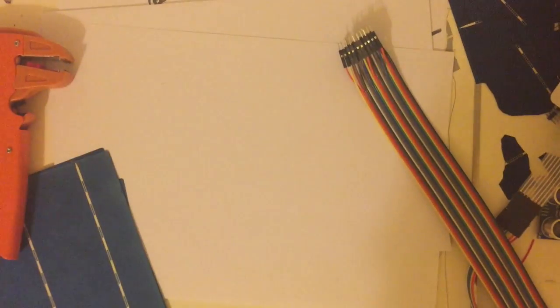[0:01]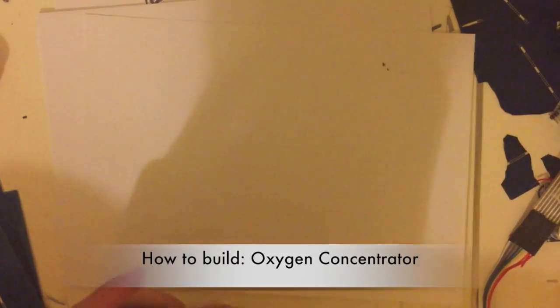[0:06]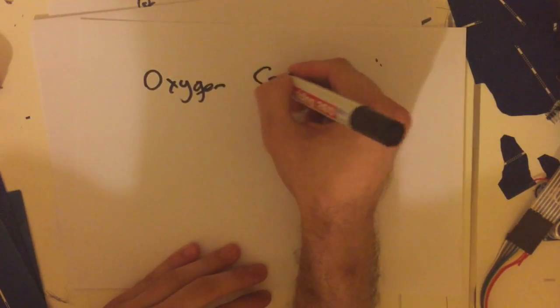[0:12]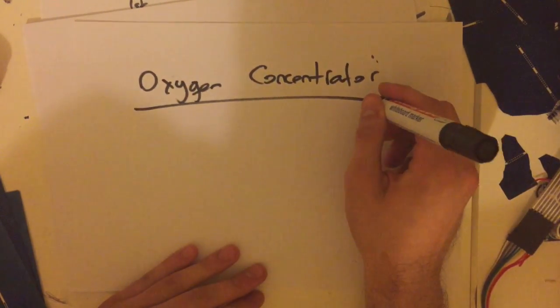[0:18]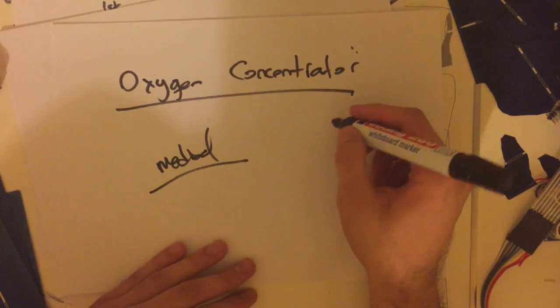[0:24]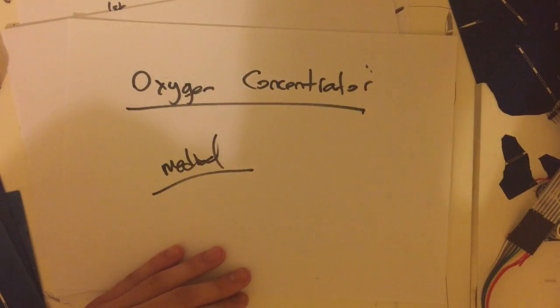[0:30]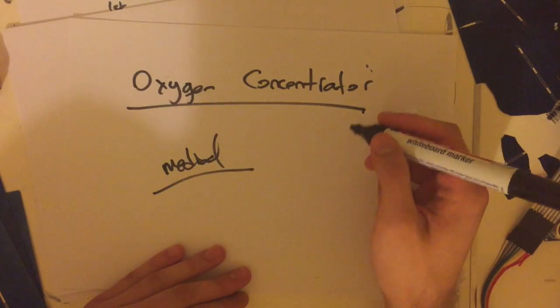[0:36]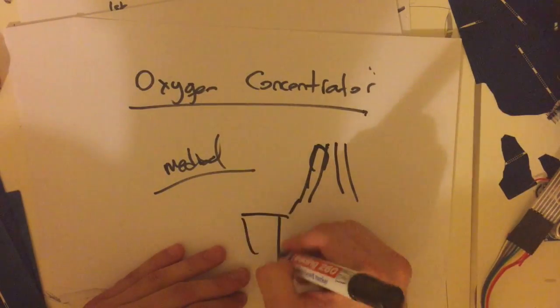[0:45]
Hi guys, so today we're going to be building an oxygen concentrator. What this device does is, this is actually a medical device used frequently in hospitals and in the homes of patients who need enriched oxygen air to breathe because they cannot breathe well. So people who are really sick use this device with some tubes coming out of the device into their noses.
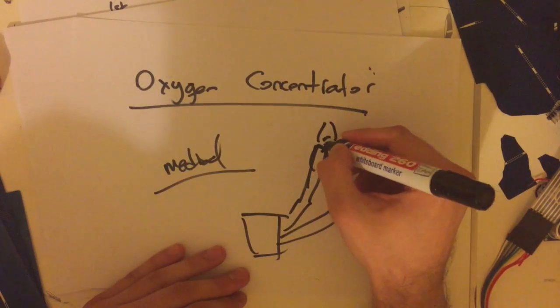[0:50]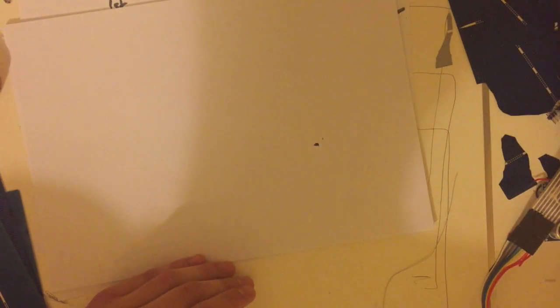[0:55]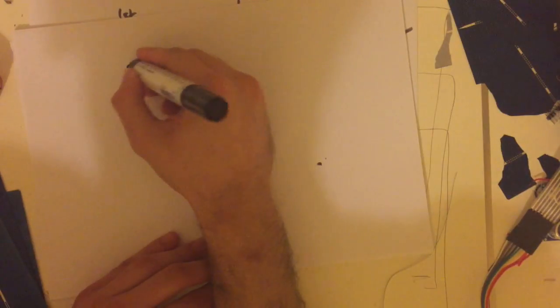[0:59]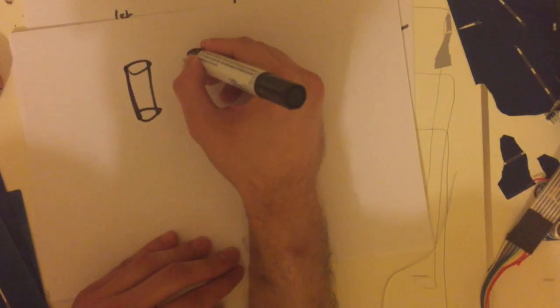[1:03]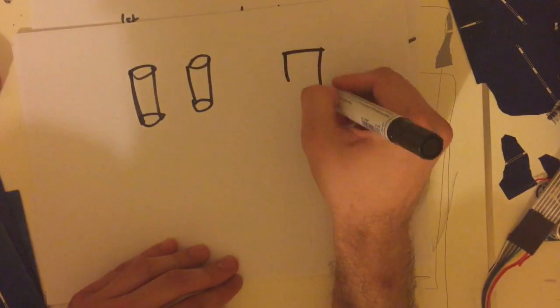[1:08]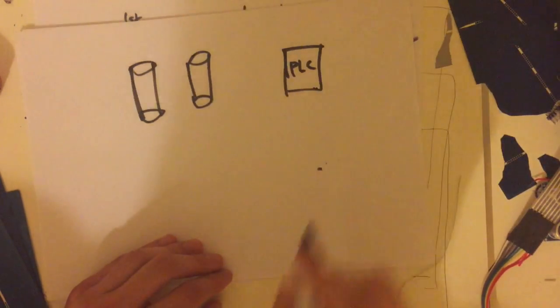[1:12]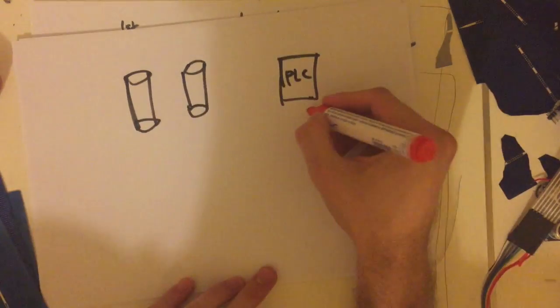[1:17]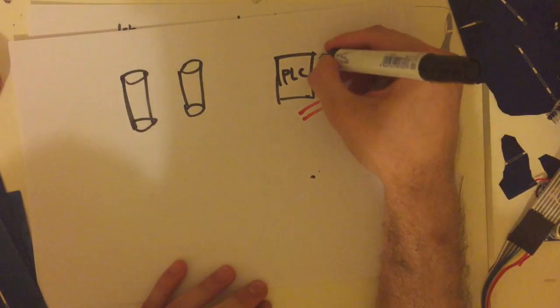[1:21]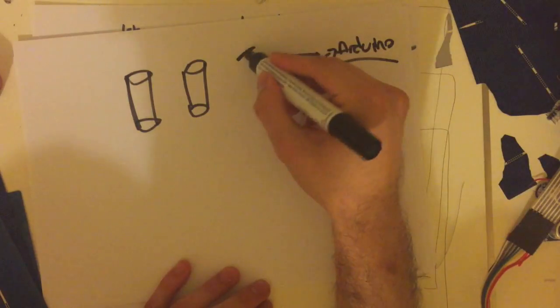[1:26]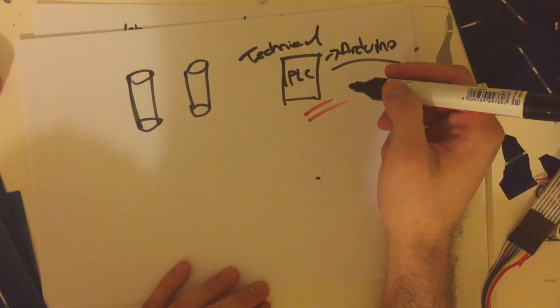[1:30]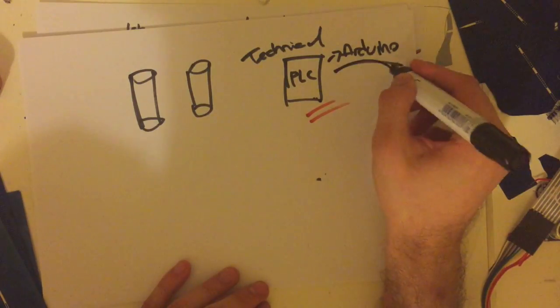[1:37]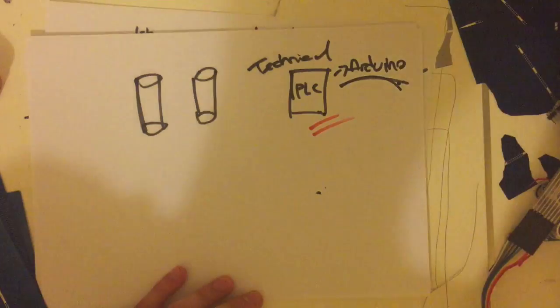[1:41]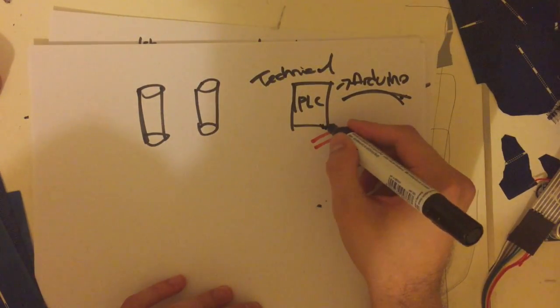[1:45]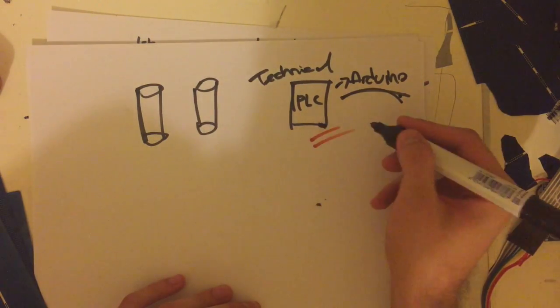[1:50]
Okay, so in order to build this device, we're going to be needing a couple of materials, such as some iron tubes or aluminum tubes, two of them actually, a device called PLC. This is very important for the project, because PLC is something like Arduino, but it's more technical. It's rather more technical and professional in terms of RAM, processing speeds, and memory. I'm sorry, memory. Arduino's memory is actually better than PLC. I mean, design-wise, it is better, but PLC is much more frequently used in factories or homes, mostly in boilers.
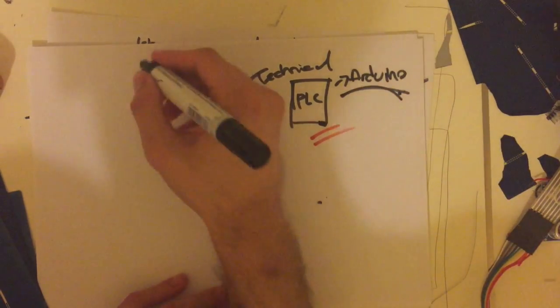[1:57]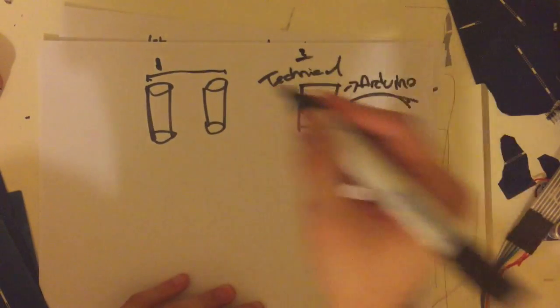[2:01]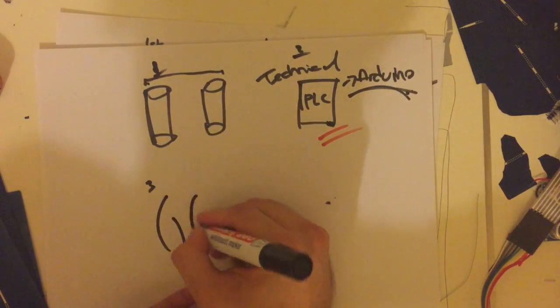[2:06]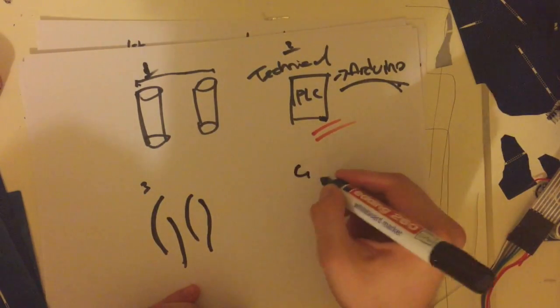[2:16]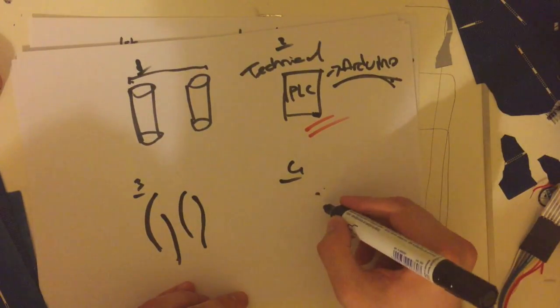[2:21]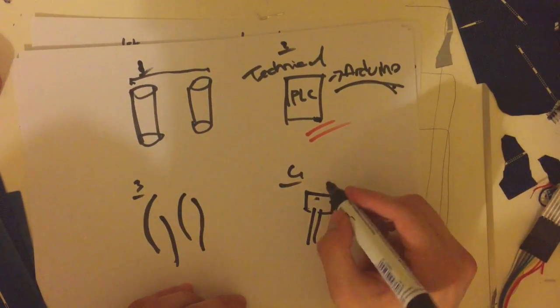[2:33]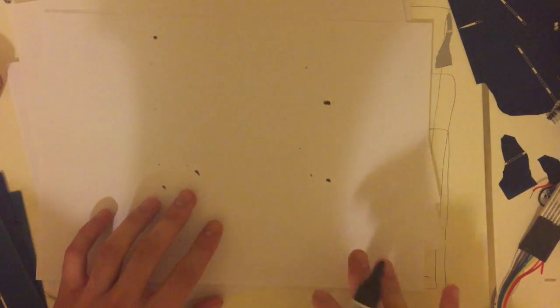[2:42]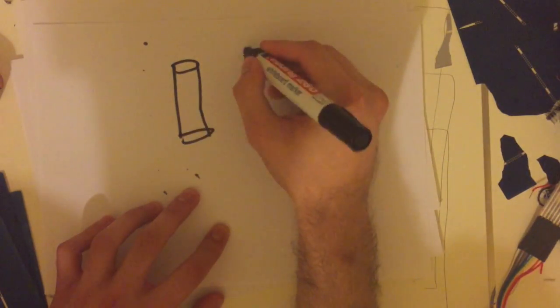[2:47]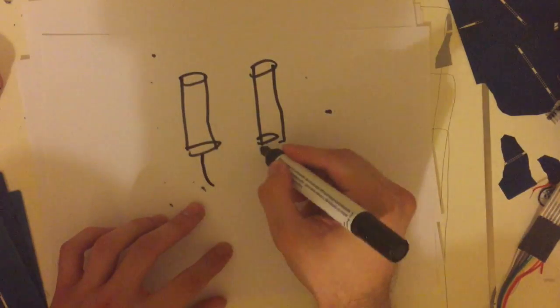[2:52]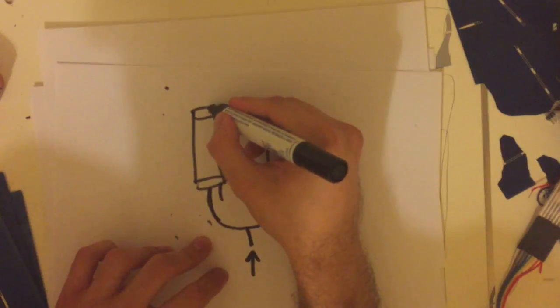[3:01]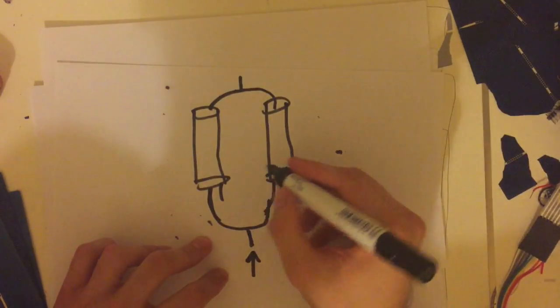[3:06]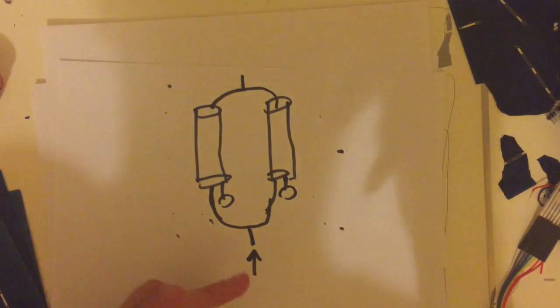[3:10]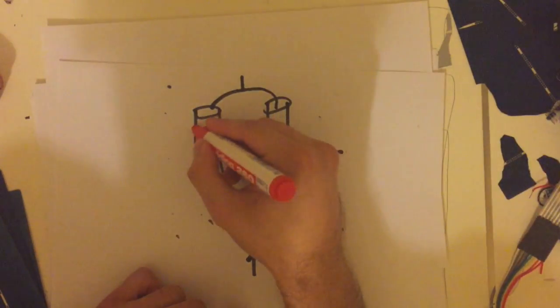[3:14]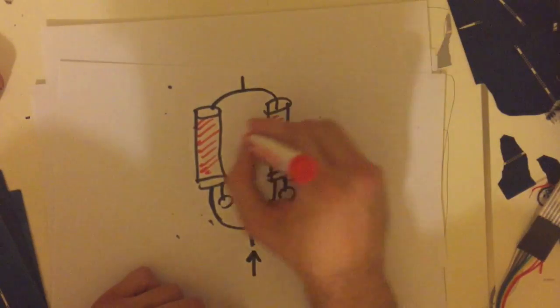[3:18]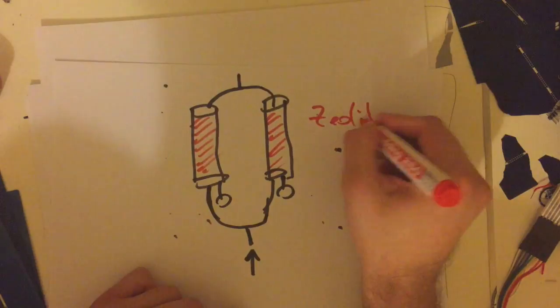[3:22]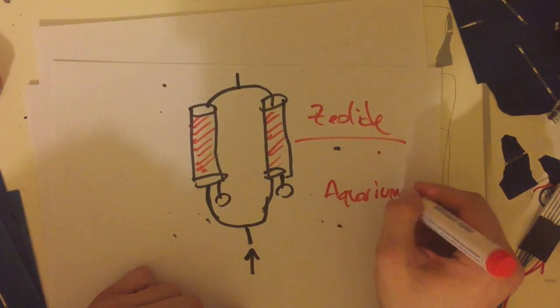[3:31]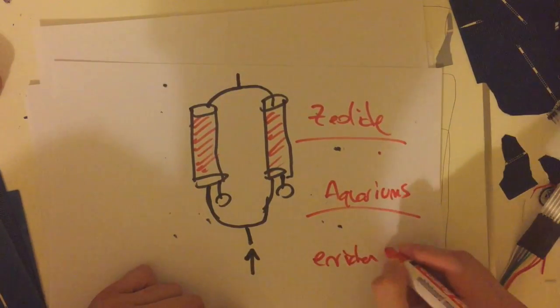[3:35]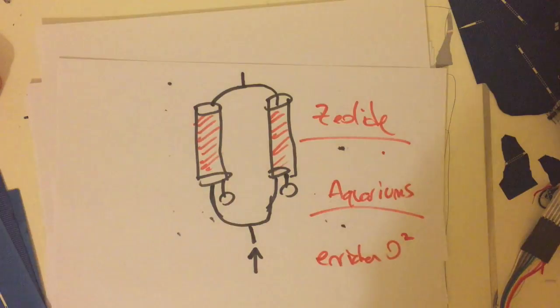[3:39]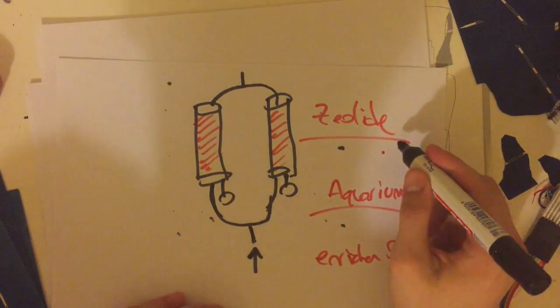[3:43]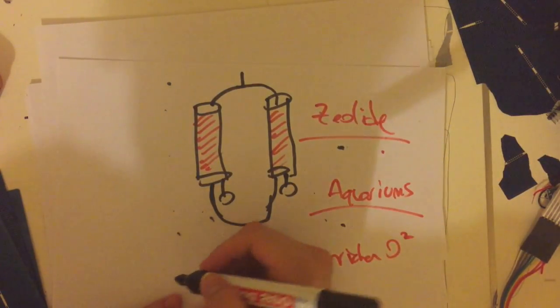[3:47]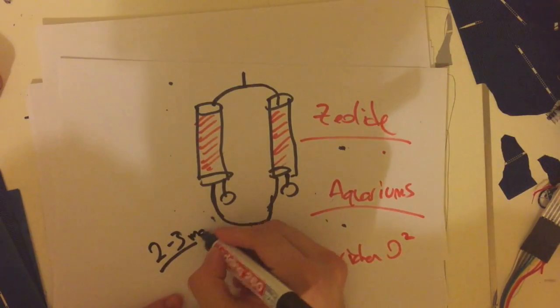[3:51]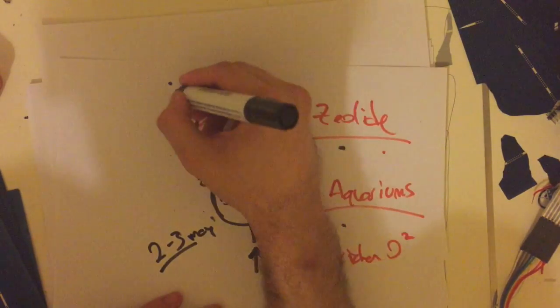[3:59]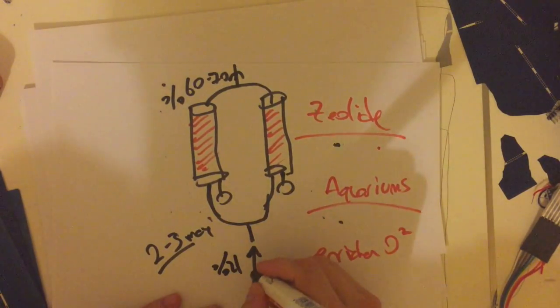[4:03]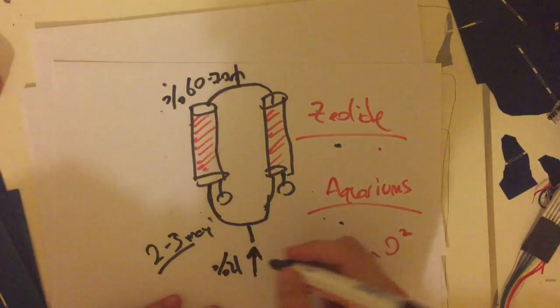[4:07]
These will be our exhaust tubes. So the working principle of this product is that we're going to be filling these aluminum tubes with a material called zeolite. Zeolite is also used in aquariums for fishes to enrich the oxygen levels. Okay. So we're going to be filling these aluminum or iron tubes with zeolite and applying slight pressure, about 2 to 3 bars at max, to create an oxygen output of 60 to 70%, where 21% of oxygen was our initial oxygen level in the air.
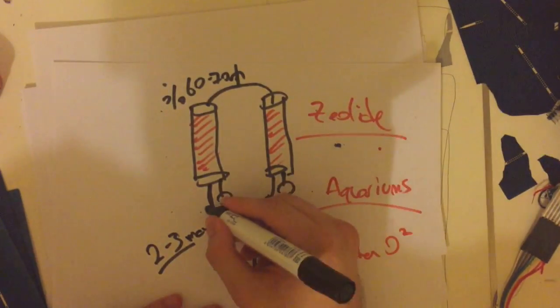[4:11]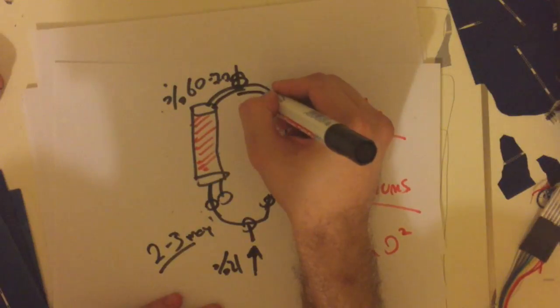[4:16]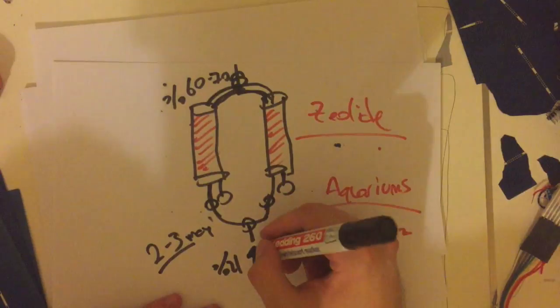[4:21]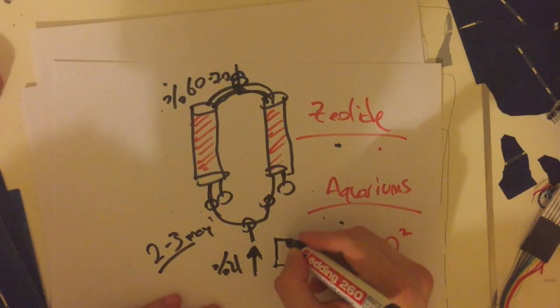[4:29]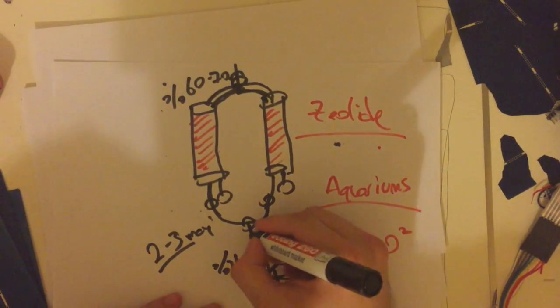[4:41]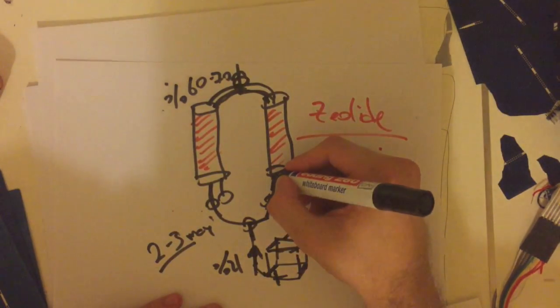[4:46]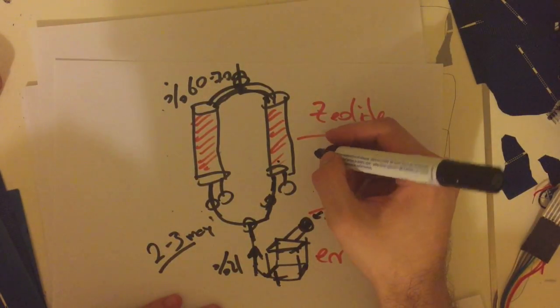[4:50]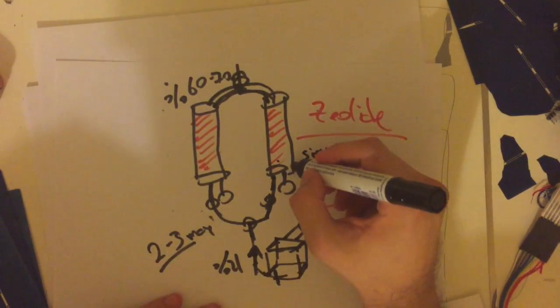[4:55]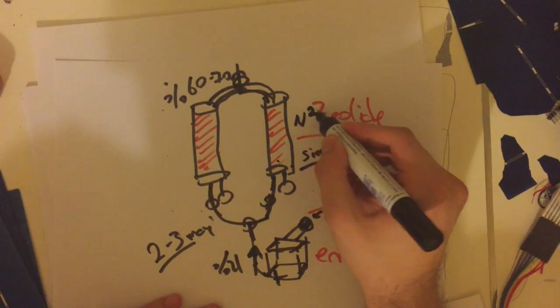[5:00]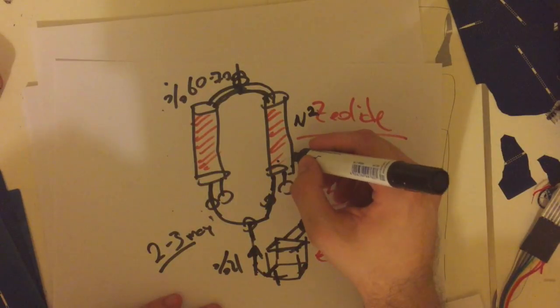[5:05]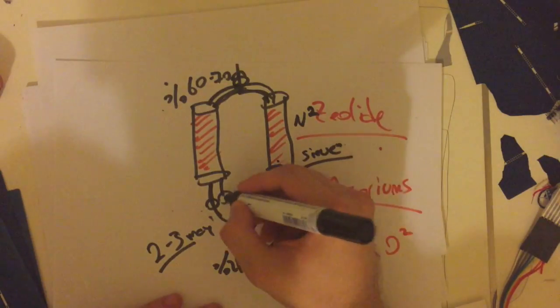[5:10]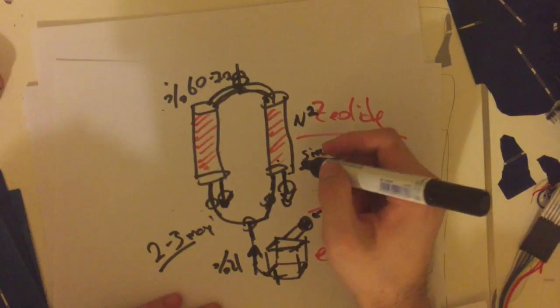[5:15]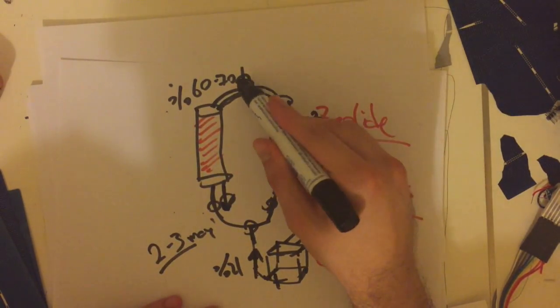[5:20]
So we're going to be placing a valve right here, here, and here, and here. So this is double. Okay, so 2 tubes are coming actually through this valve. So okay, we turned on the electric motor right here. Let me draw this. I forgot to include this in the materials list. Okay, I know my drawing is the worst, but anyways. So this is air in, air coming in with pressure. With the pressure in the air, zeolite is actually acting like a sieve. This is also called a molecular sieve. And with the right pressure, N2 is being subtracted from the air. So excess N2 is coming out of the exhaust pipes we have initially placed, and enriched oxygen air is coming from this side.
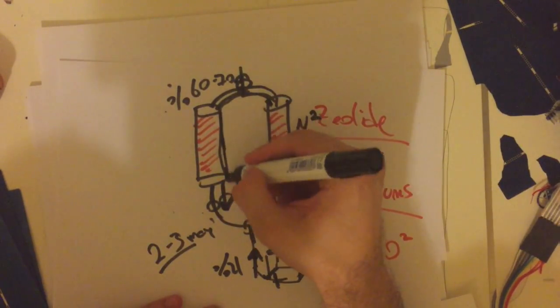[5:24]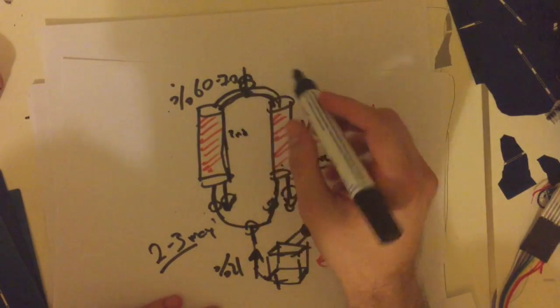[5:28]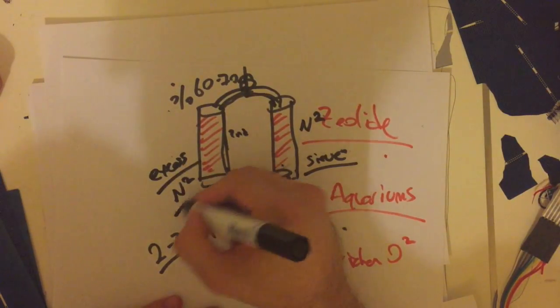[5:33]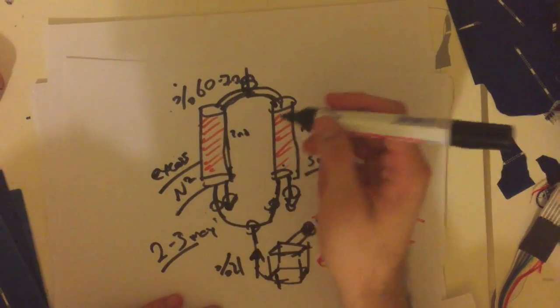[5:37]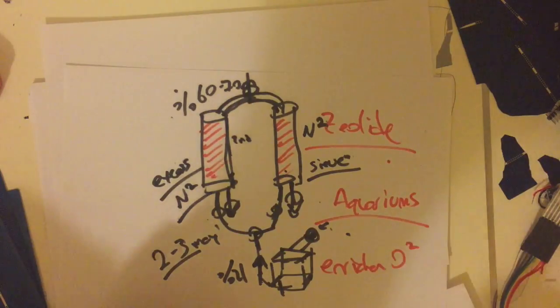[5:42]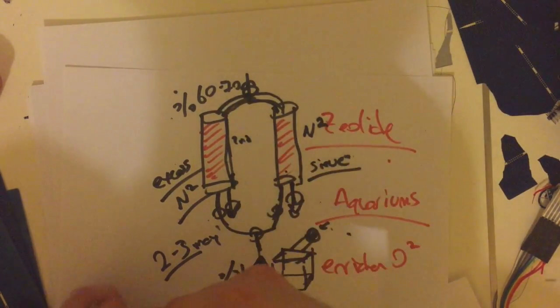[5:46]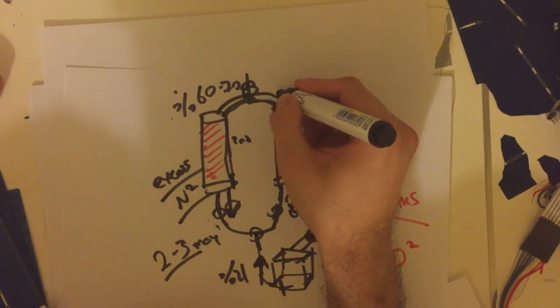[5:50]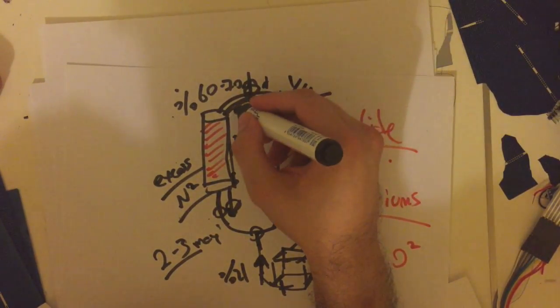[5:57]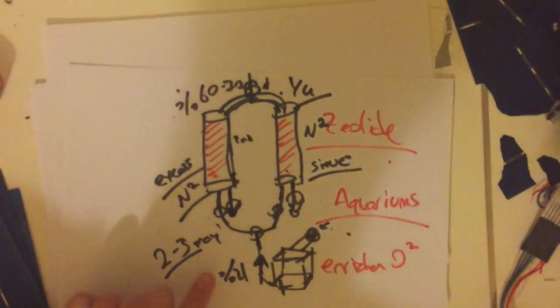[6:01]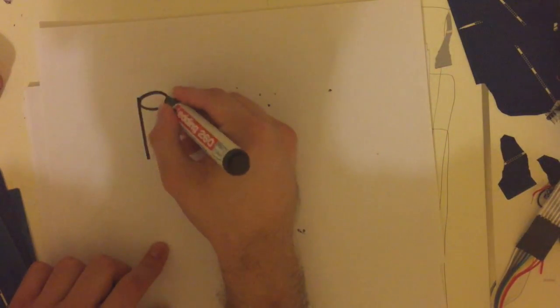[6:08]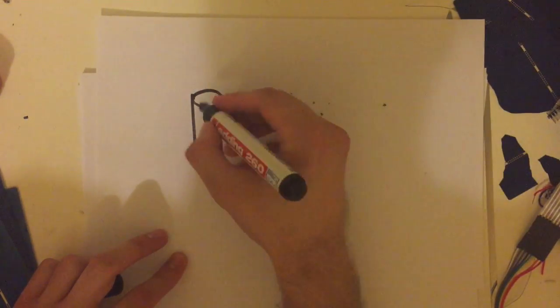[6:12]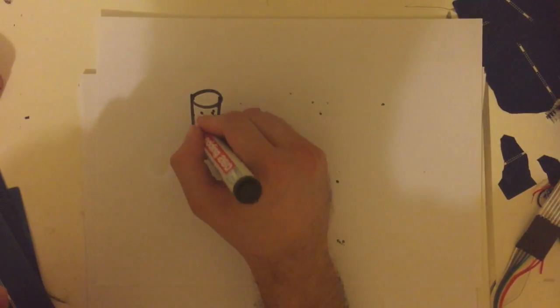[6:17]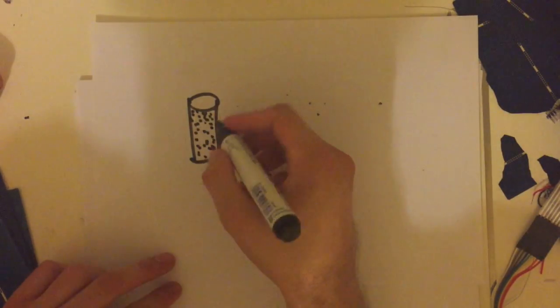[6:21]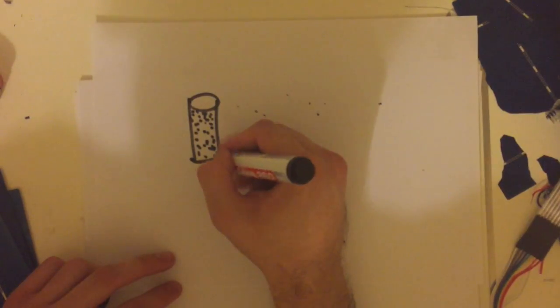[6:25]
And talking about the second pipe, let's say the first pipe was already used and there's excess nitrogen present in this tube. So in order to clean this tube up, we need to apply pressure from this side. So we're going to be sacrificing, let's say, some of the air that's coming to the output, let's say 1/4 of the air. We're sacrificing this enriched air for this tube in order for the exhaust to work. So let me draw this again. So let's say this is a dirty tube, okay? This is a dirty tube with high nitrogen levels. This is our tube, so this is zeolite present, so this is very filled up. Okay, so if I have to open this up, this will actually explode.
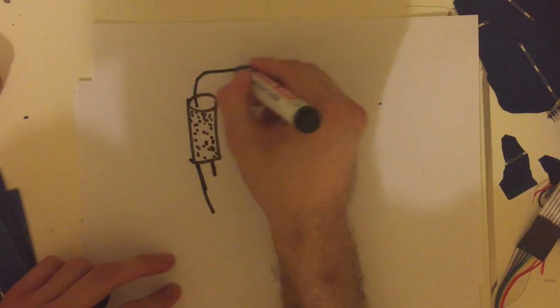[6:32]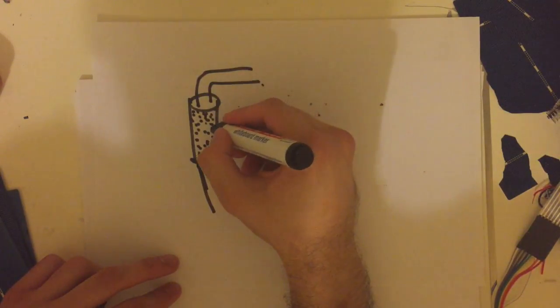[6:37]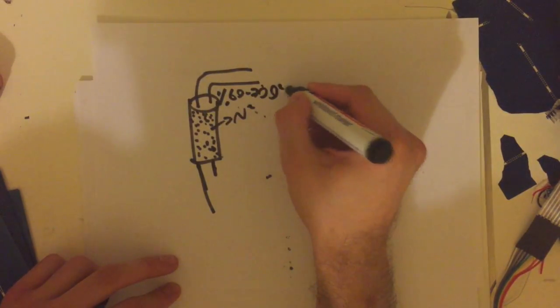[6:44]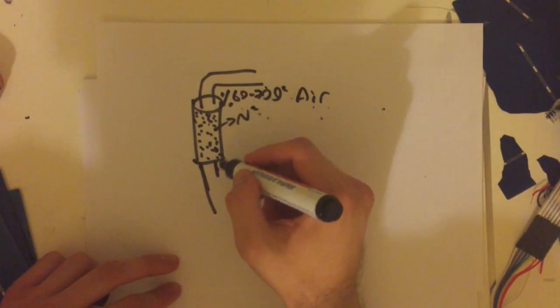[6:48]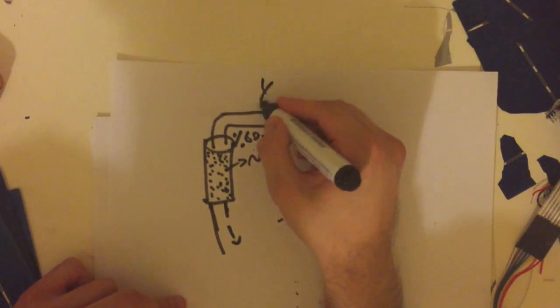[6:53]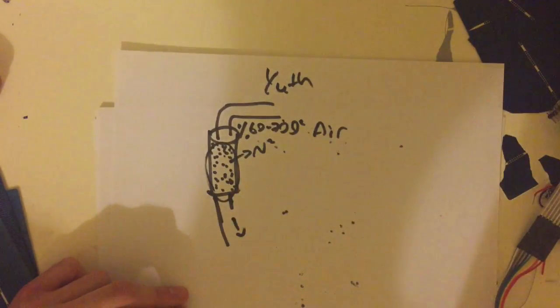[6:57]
All right, so when we apply the air from here, so this is our exhaust, don't forget. When we apply the air from here, these N2 molecules are actually going with the 60 to 70% oxygen enriched air, sticks with the nitrogen, goes out from the exhaust. So what we do is we sacrifice 1/4 of the air to clean this tube up. So this is the main idea of the system.
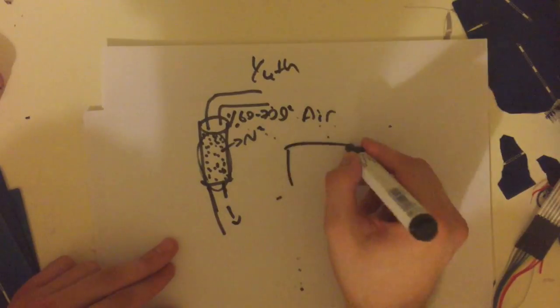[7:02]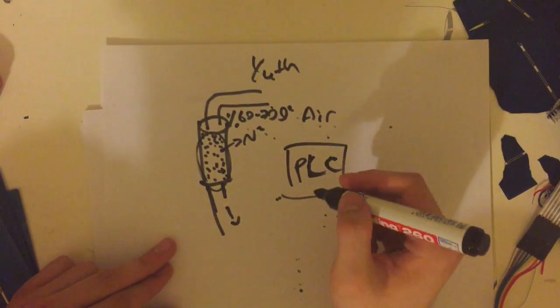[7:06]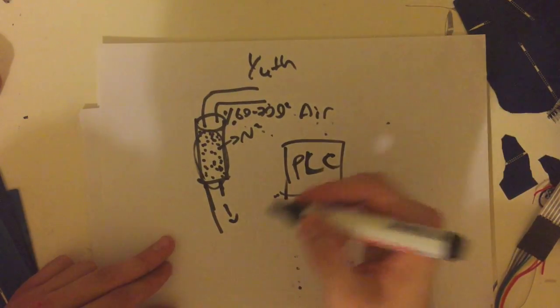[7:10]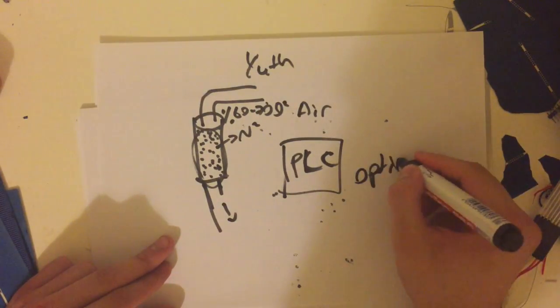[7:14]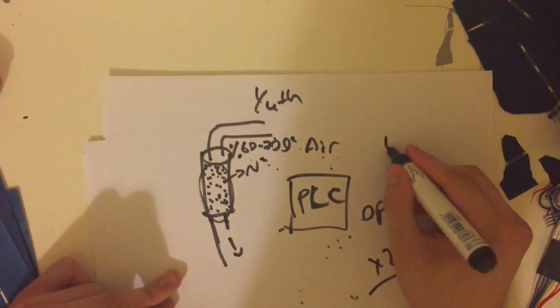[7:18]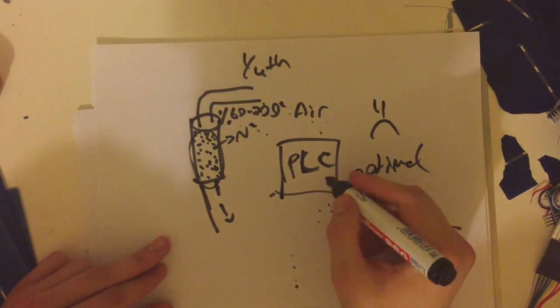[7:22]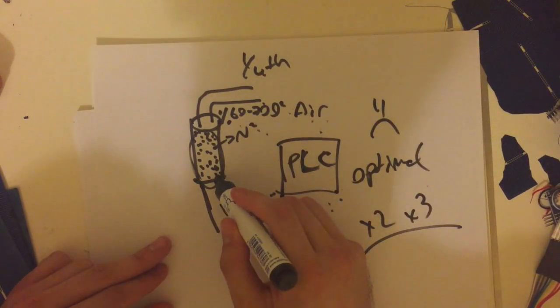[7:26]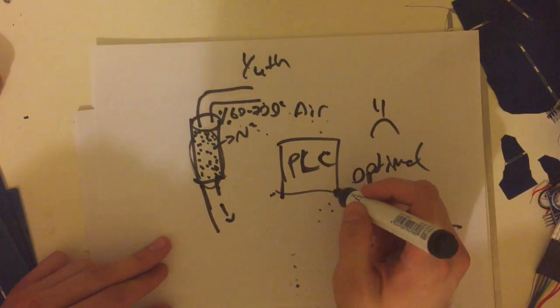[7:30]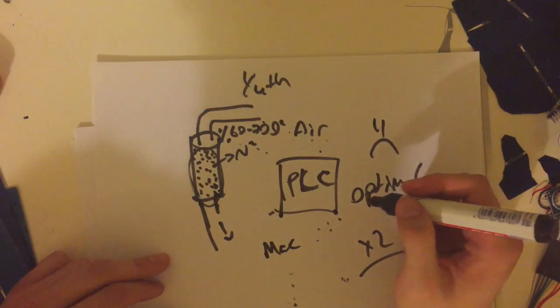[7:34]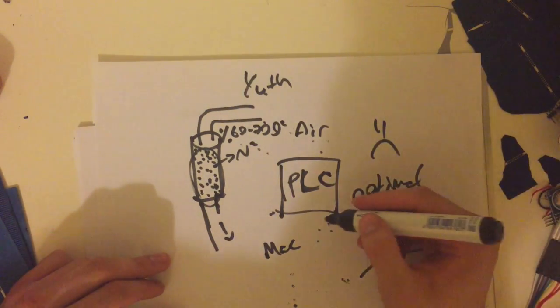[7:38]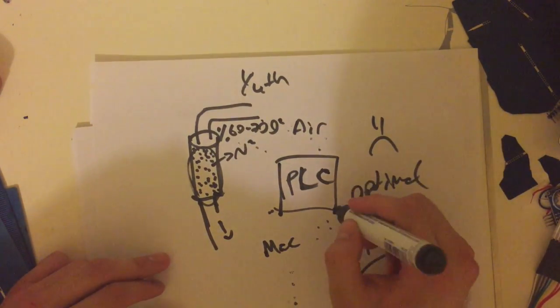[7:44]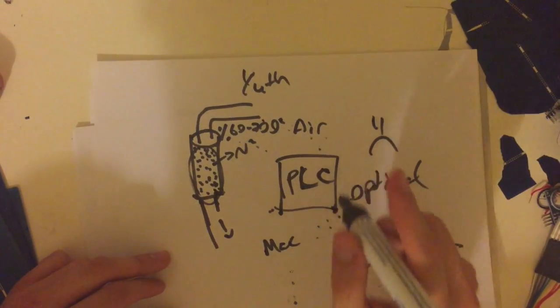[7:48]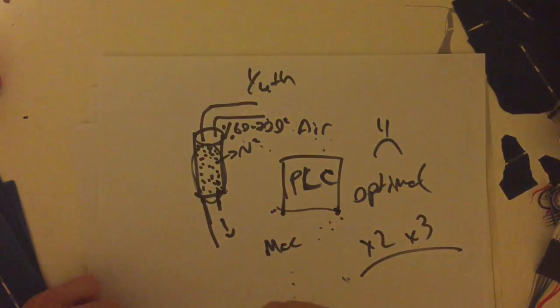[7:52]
So what PLC does is that PLC actually controls which valves to work in which order, in which time, in which frequency. So for the most optimal results, of course, we need to have a couple of trials, and it was a long journey. I spent a lot of time working with the PLC as well as the tubes, but the tubes were actually the easy part. And luckily, the PLC didn't work on Mac. You have to have a Windows operating system in order to control the PLC actually. And that took a couple of days, but no matter what, it was a magnificent project. The results were insane. You have to see it. So let's go to the finished result and see what we did there.
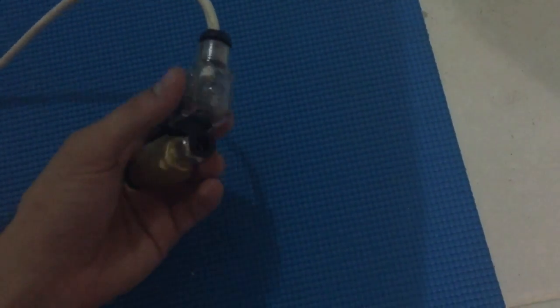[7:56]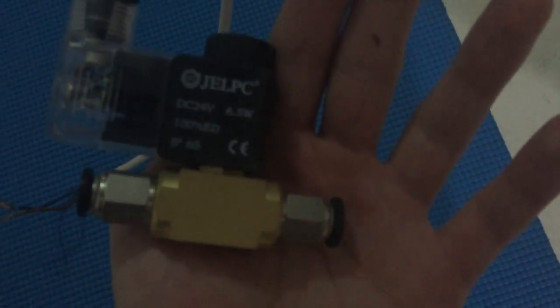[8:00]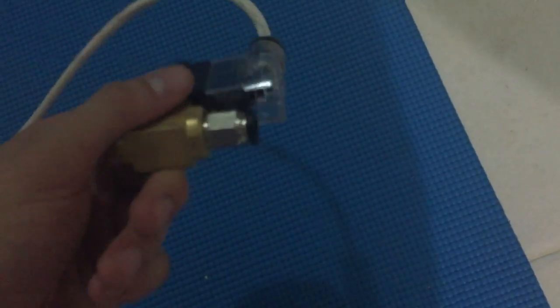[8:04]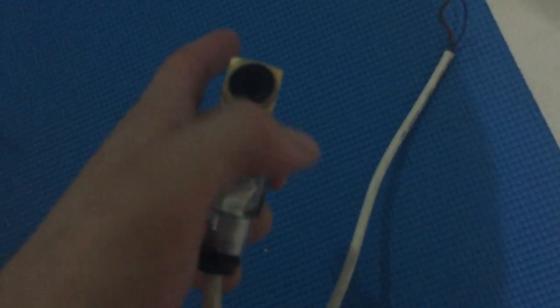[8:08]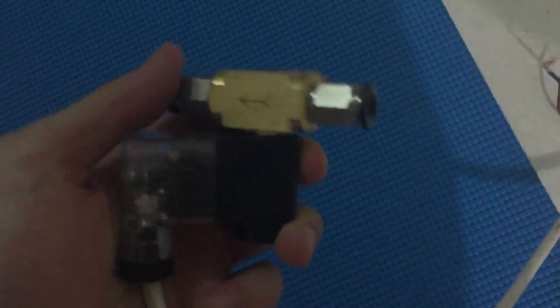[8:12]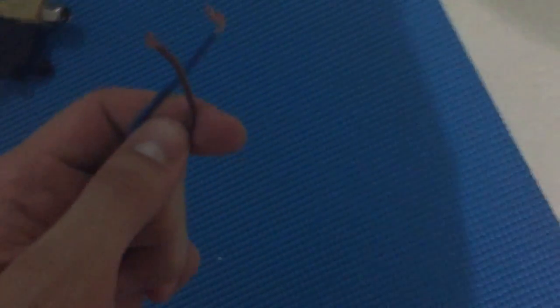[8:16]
Okay, so these are the valves that we will be using in our project. As you can see, it works with DC 24 volts, 6.5 watts. This is the input of the valve tube, and this is the output of the valve. And this is to be connected to the PLC right here.
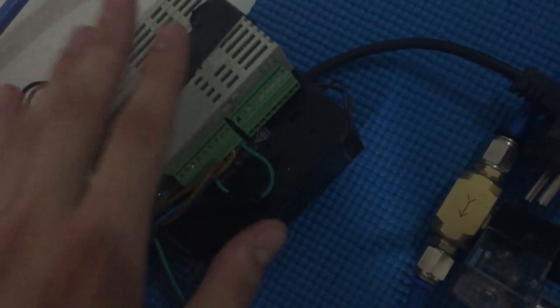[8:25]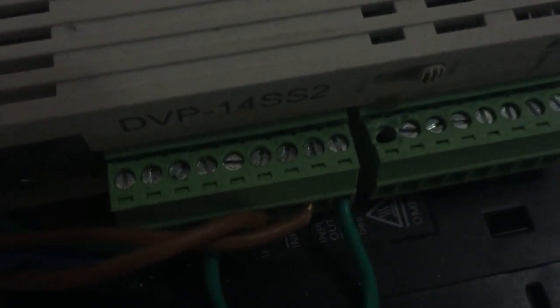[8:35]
So this is the PLC and this is the power generator for it. This is the adapter, the power adapter, and this is the PLC. As you can see, you connect the cables to the PLC in this order. This is for data transmission, and these are for the power plugs of the PLC.
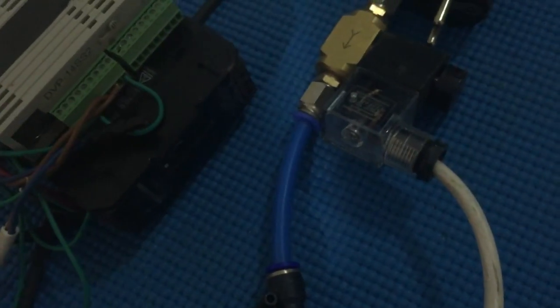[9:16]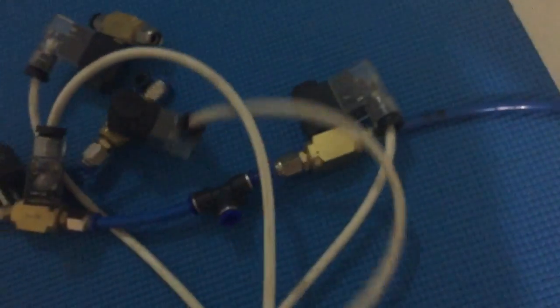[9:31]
This is to be high voltage and this is to be low voltage, and you just have to connect the ends of the valves in this order, and then you can align the order of the valves in the computer. So yeah, you're going to need a couple of these valves. Actually, you're going to need 5 valves for this project.
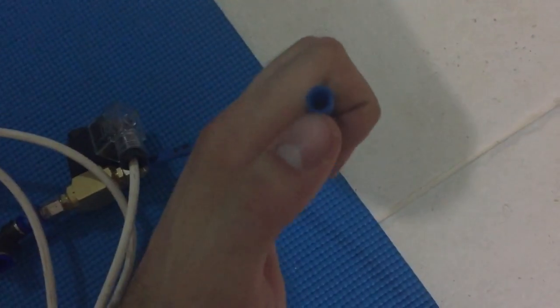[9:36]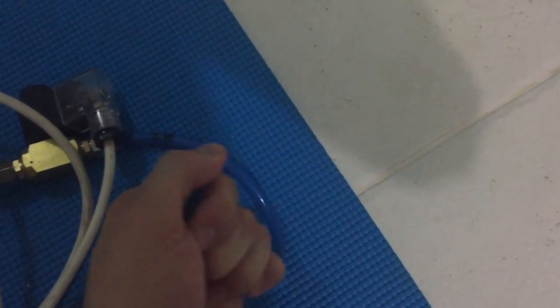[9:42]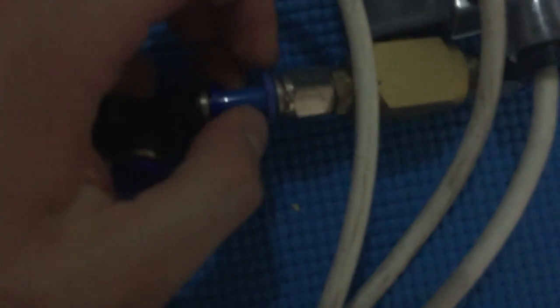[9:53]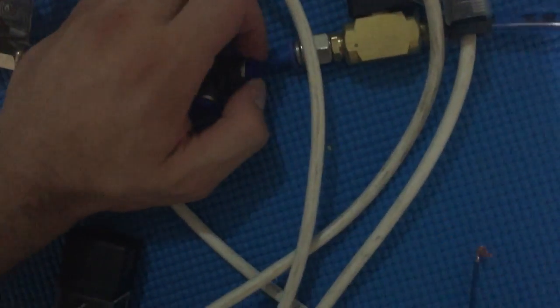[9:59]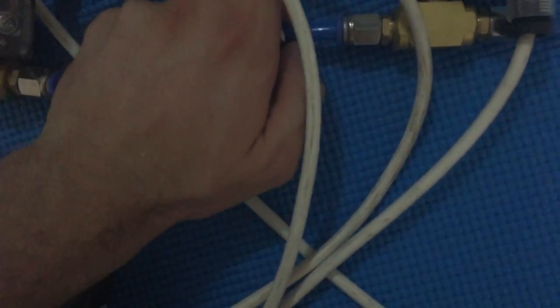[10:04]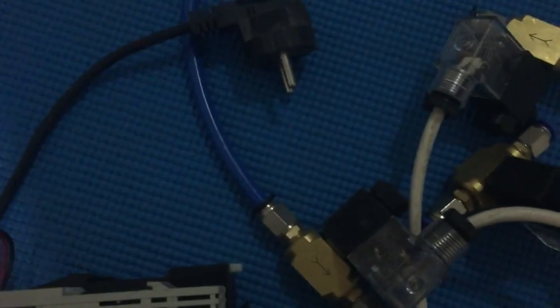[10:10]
And these tubes, so these are the tubes I was talking about earlier. These are tubes that were specifically designed not to let go of any fluid or air. You can take these off by squeezing it or by pressing right here. As you can see, it comes up very easily. You can do this by doing the same thing again. So yep, these are the valves, and this is the material I was talking about.
This is called zeolite, also known as the molecular sieve, Zeox O2 plus. The particles are very small, so they're acting as if they're fluid. All right, so you're going to be filling these tubes with zeolite.
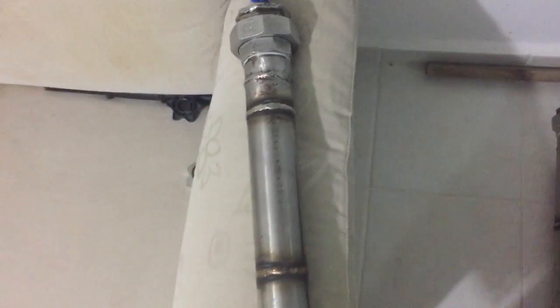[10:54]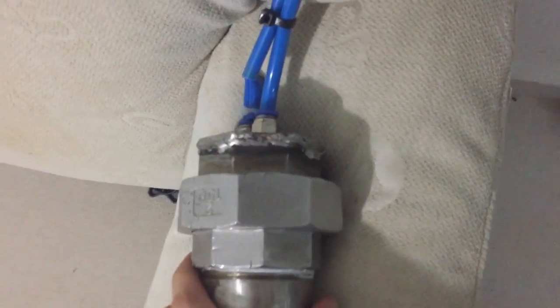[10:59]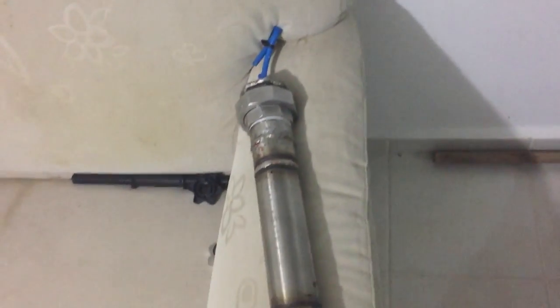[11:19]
I've had these made at a factory. These are iron, I'm sorry, these are iron. The aluminum one was broken because we needed high pressure on the inside. They just broke. So this is silicon. Before you finish with each tube, you have to apply silicon to each end in order not to let loose any zeolite that is inside the tube.
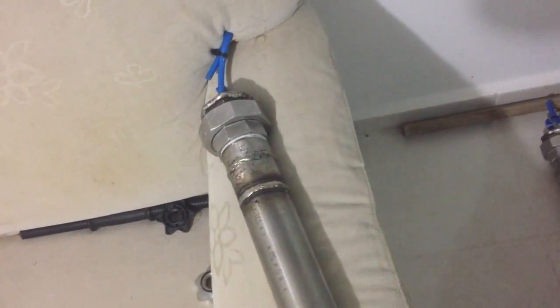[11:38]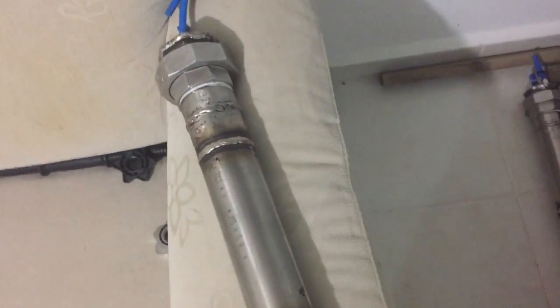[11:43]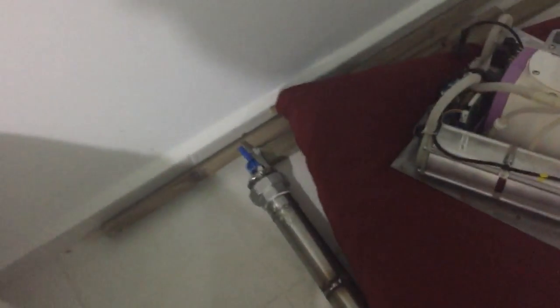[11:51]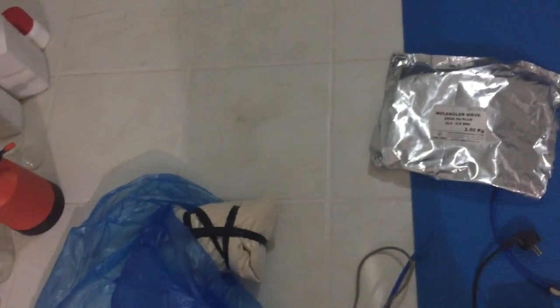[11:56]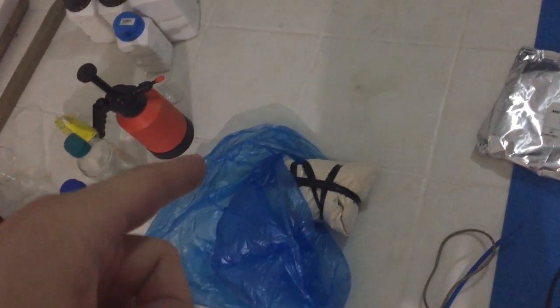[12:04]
This is crucial because if you don't do it, when you apply air pressure with the DC motor, you're going to have a bad time because zeolite is going to spread everywhere on the floor, and it's not a cheap material, so you're going to be losing your zeolite. They're going to be losing their effect. And what else? PS, if you let the zeolite touch water, it's done. The zeolite's gone. The whole packet is gone.
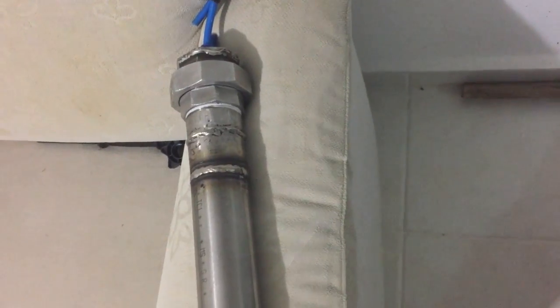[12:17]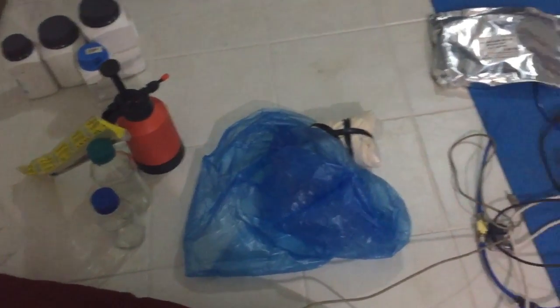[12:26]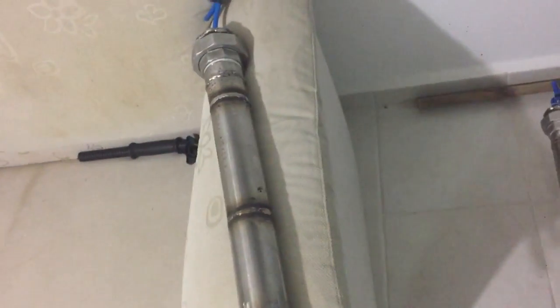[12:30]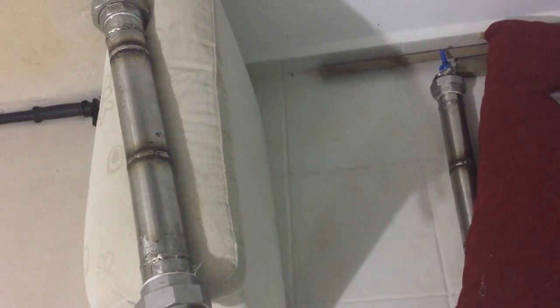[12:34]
It's the same for water that is present in air, so you have to close the cap of anything that you put the zeolite in. All right. So these are all the materials that you'll be needing. These are the two tubes, and okay, let's connect them together and we'll see how it will end up.
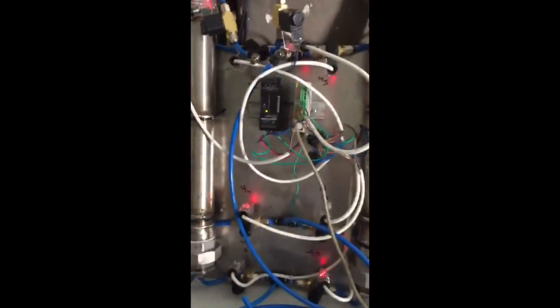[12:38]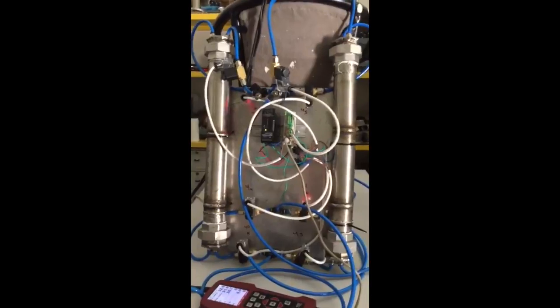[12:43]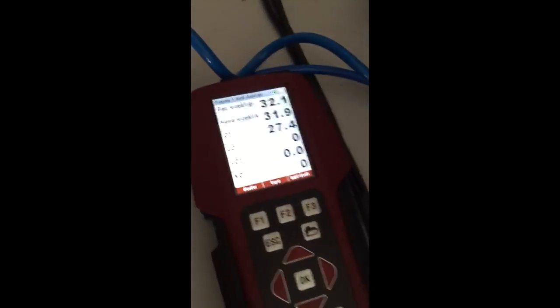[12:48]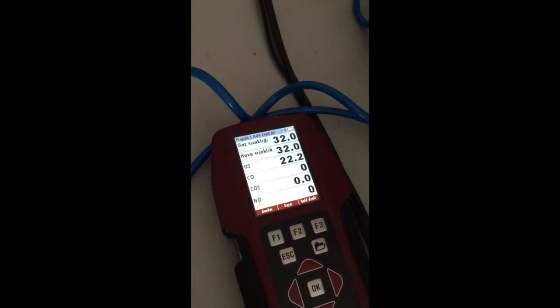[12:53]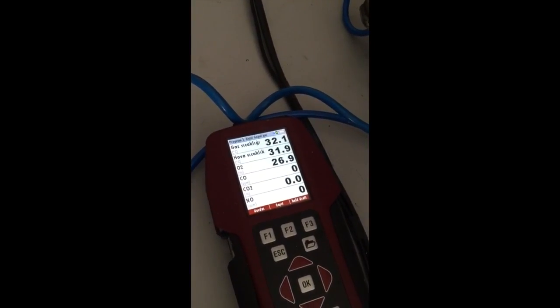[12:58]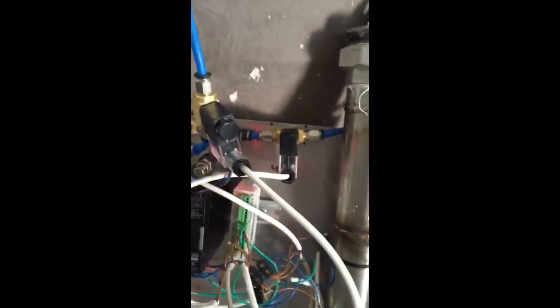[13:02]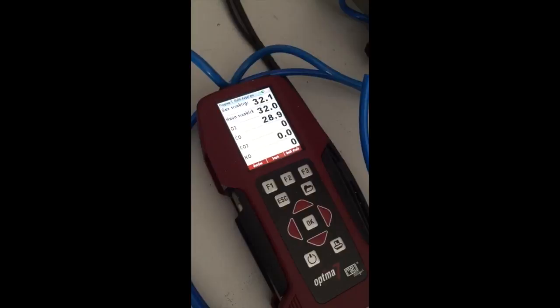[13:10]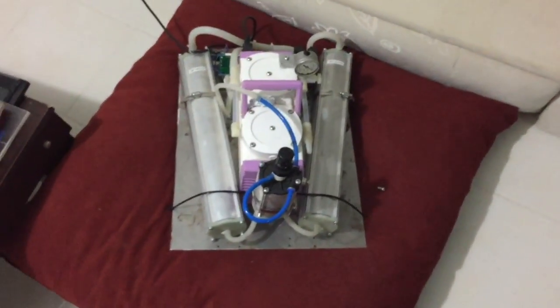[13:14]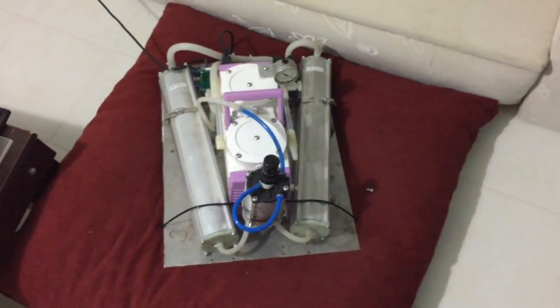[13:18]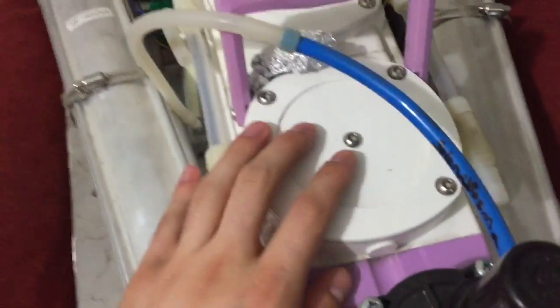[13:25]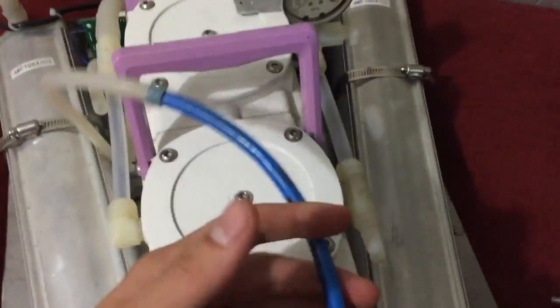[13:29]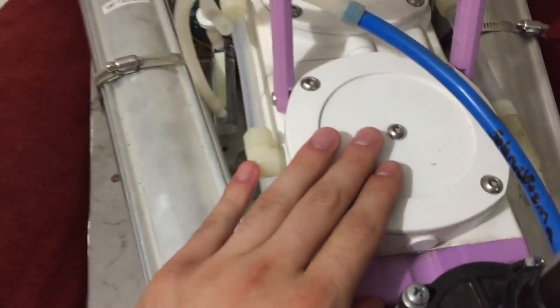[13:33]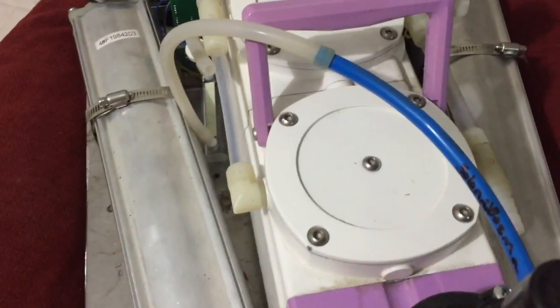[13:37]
All right, so this is the finished product of what you should be seeing as a blueprint. This is just a motor that I bought from the store. This is just aluminum foil. This is a pretty cheap material that you can get nearly anywhere for 50 to 60 TL.
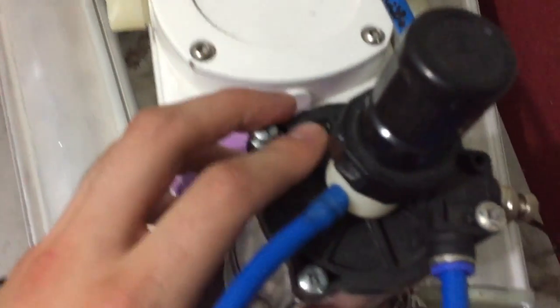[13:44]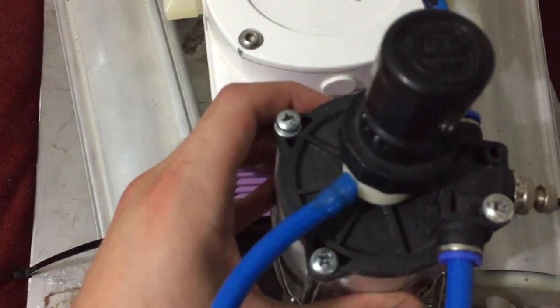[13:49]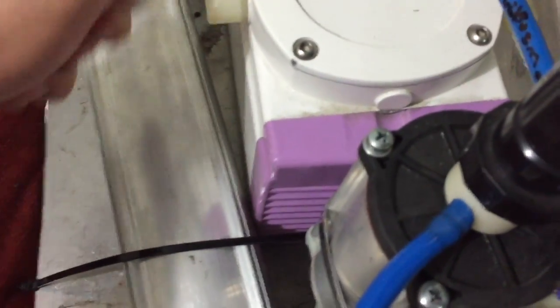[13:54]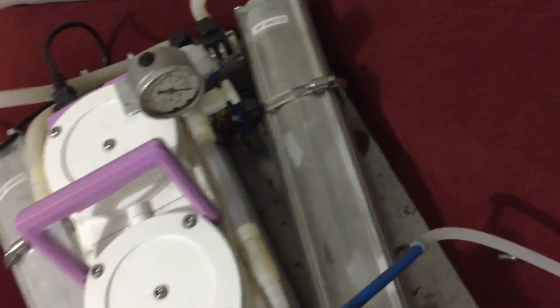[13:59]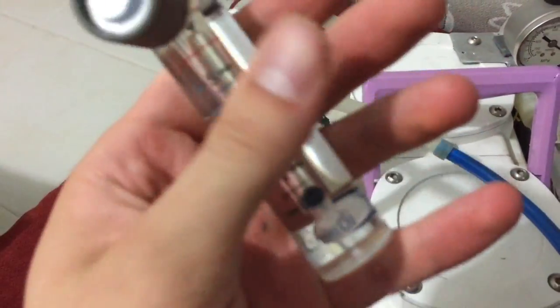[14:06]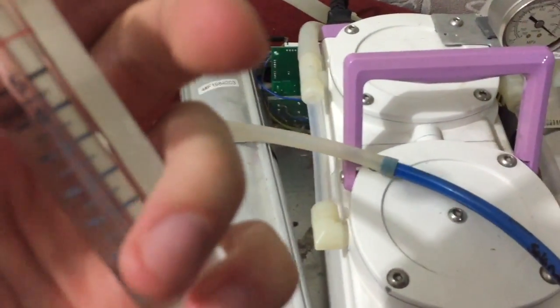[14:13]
And these are the tubes. These are aluminum to make it a bit lighter, and this is the exhaust tube to create the necessary pressure inside the whole system. This is a closed system, so we have to keep the pressure stable inside the tube. I put this to enable the user to handle the pressure, the rate of air
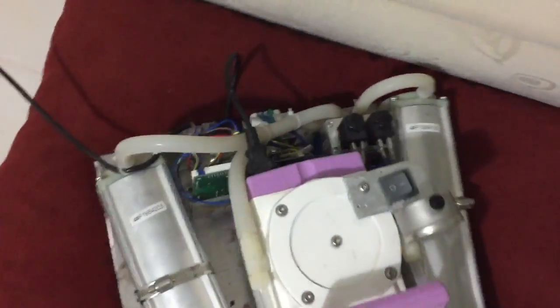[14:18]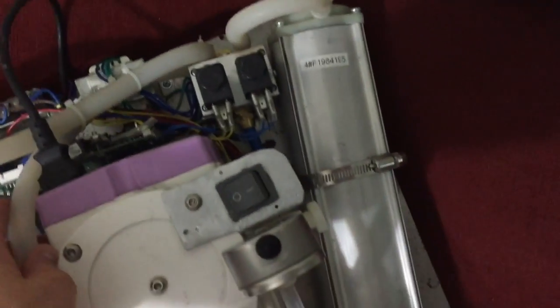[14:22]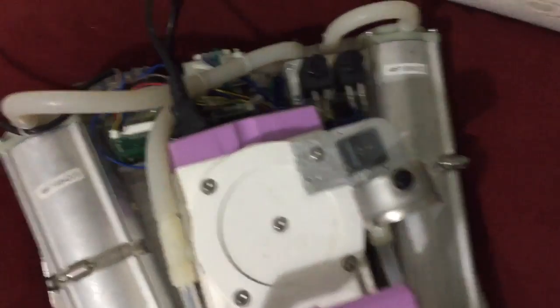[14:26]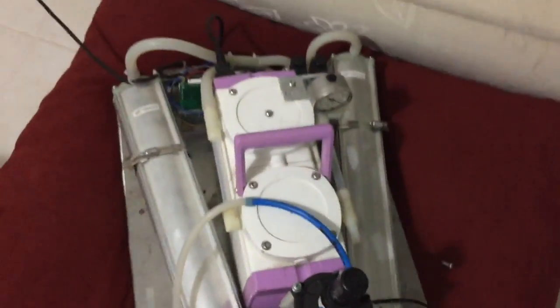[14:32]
that's coming out. Now this is the PLC. This is the PLC right here, and let's see. Okay, so let's turn this on. Right, so you can see the PLC's light. Where is it? Yep. There, it's working.
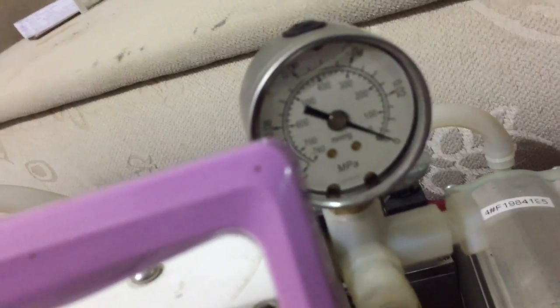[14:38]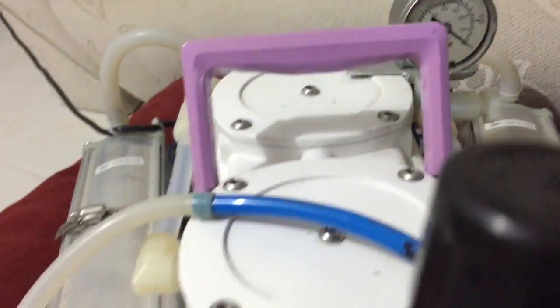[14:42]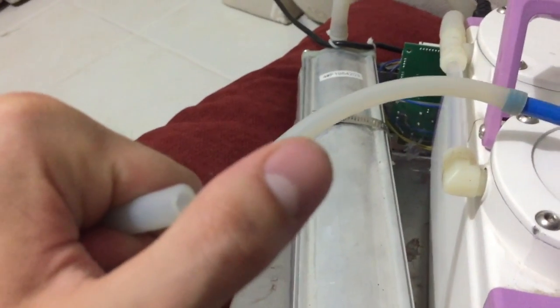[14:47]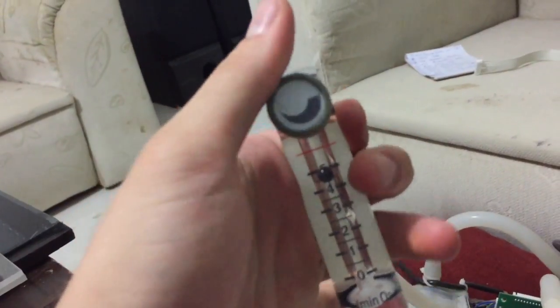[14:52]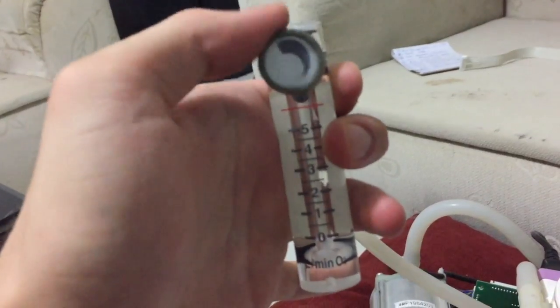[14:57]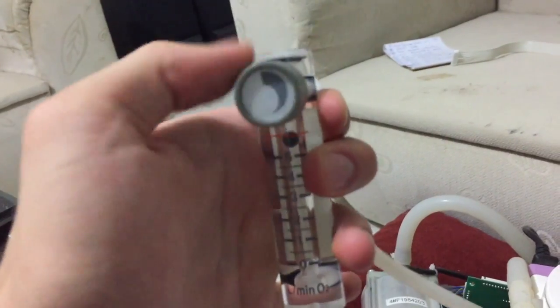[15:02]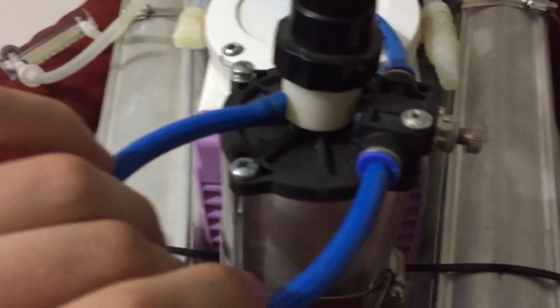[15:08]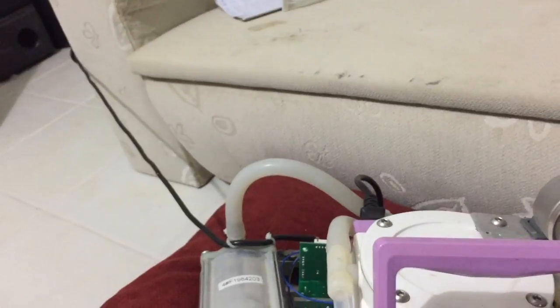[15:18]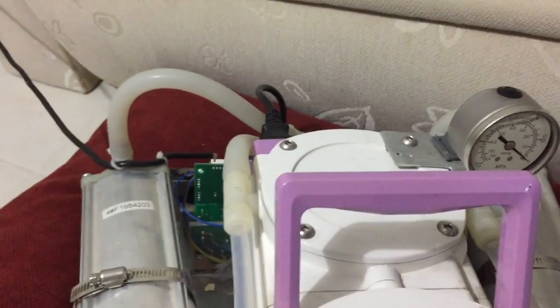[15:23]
There's actually airflow coming right from here, and you can change this. Alright, so this is actually not working right now. Okay, so this is the final result. As you can see, the exhaust is working perfectly fine. The only problem is the noise. It's creating a lot of noise, and this is all working fine.
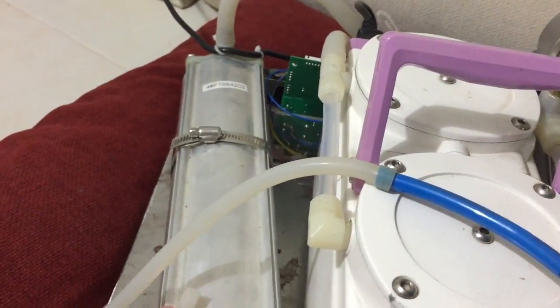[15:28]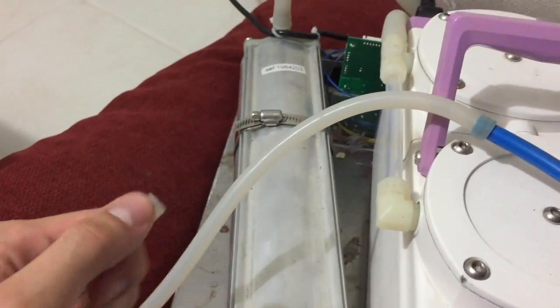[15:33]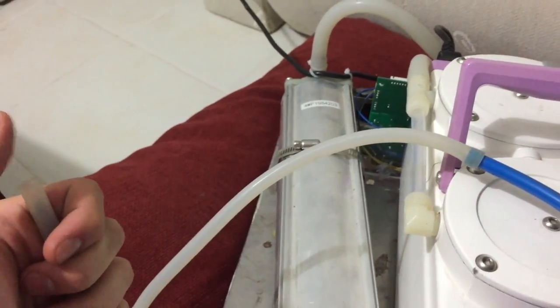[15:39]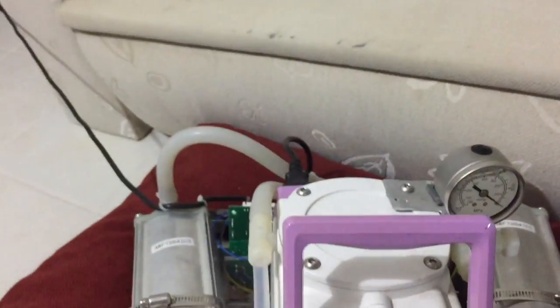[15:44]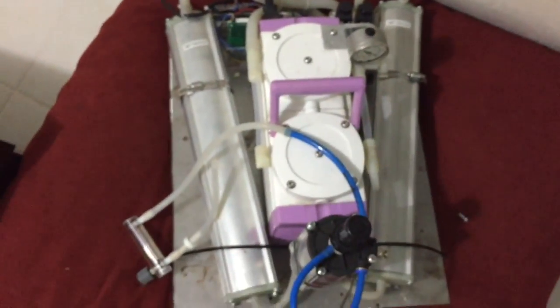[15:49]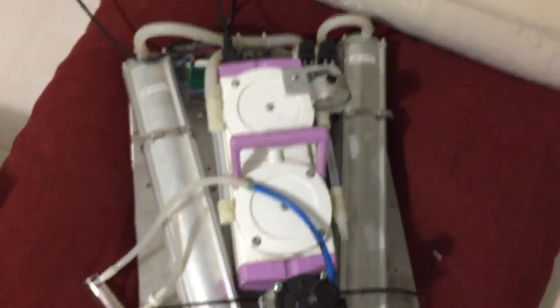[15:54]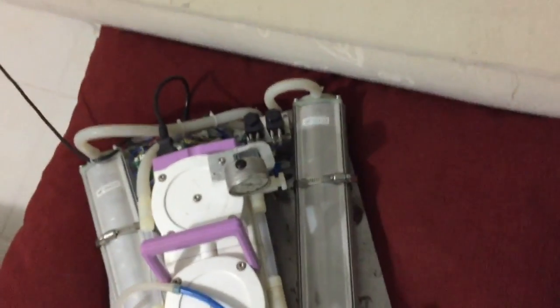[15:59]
We're going to look at the oxygen levels of this output with an oxygen sensor. It's a very expensive material, so we're going to borrow it from somewhere else. So yeah, that's it. I'm going to draw this whole thing on paper to make it seem a bit more ordered, I guess. But this is the final result. It's beautifully working. It's great.
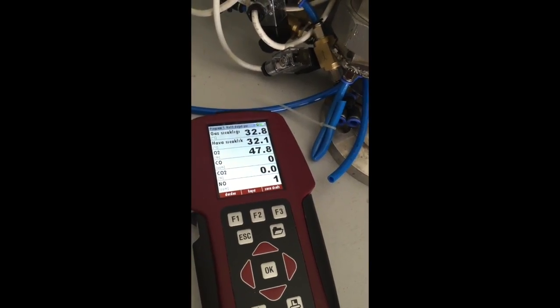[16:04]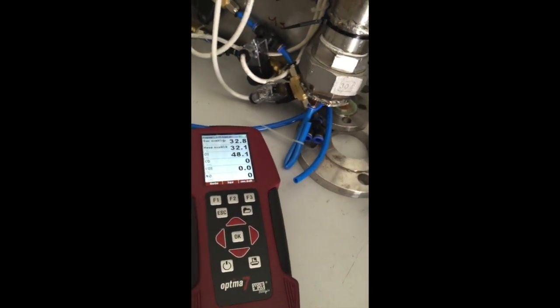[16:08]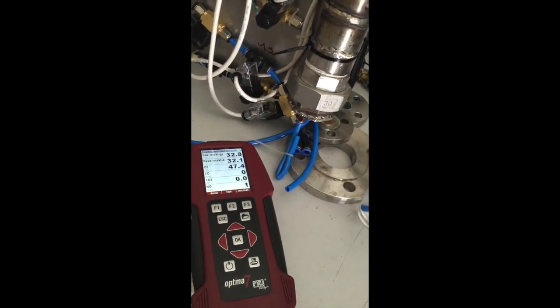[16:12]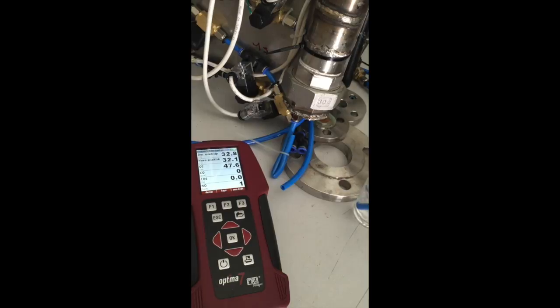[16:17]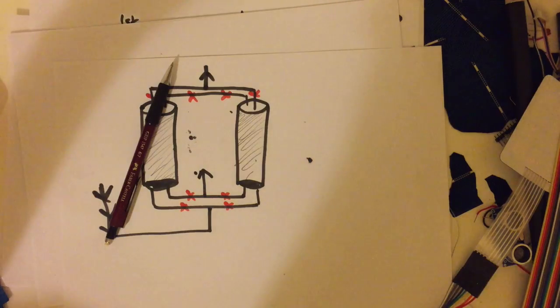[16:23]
As you can see, the oxygen levels are nearly 48%, 47.7 right now. The air has 21% initially, so we have doubled the oxygen in the air. Okay, so this should work as a blueprint.
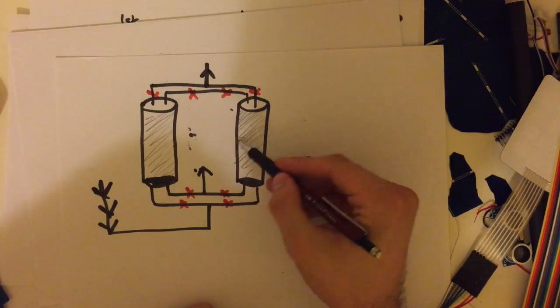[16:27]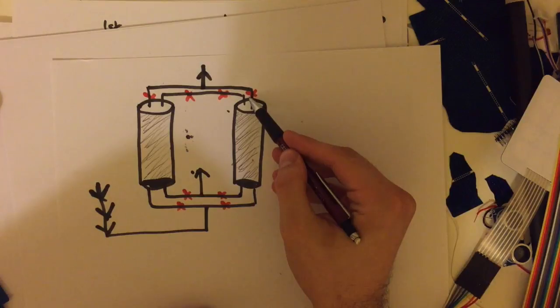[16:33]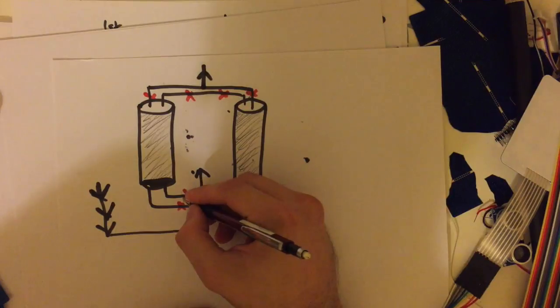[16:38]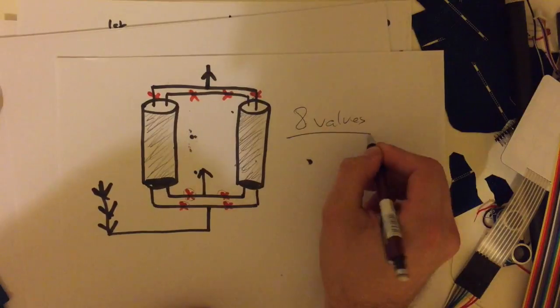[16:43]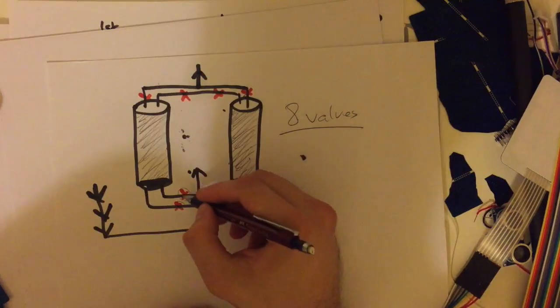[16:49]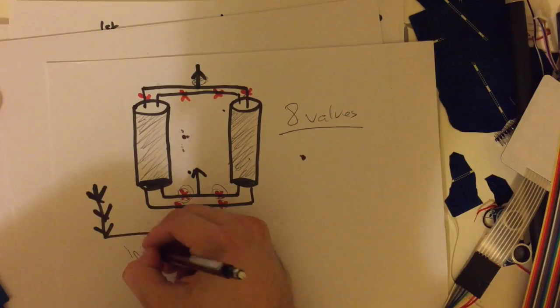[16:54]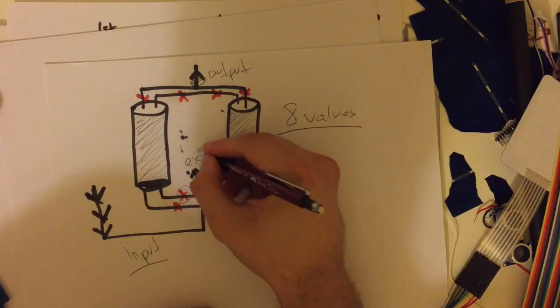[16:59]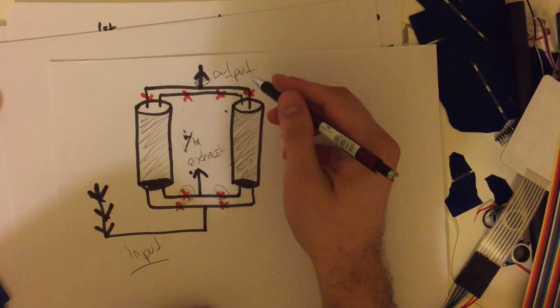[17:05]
So these are the tubes that are filled with zeolite, and the markings that are crossed with red color are the valves. So we're going to be needing 1, 2, 3, 4, 5, 6, 7, 8 valves in total. I'm sorry, I called it wrong. I think I said 5 valves, but I missed those 3 valves at the end. So this is the input of the air, and this is the output of air that's coming out, and this is the exhaust that we will be sacrificing 1/4 of the output air with.
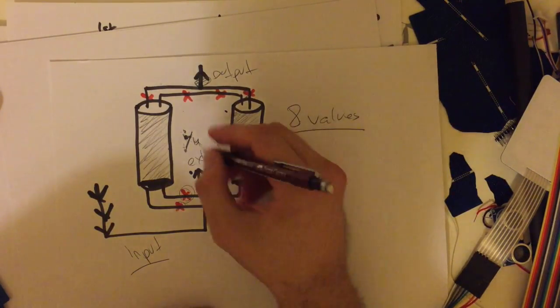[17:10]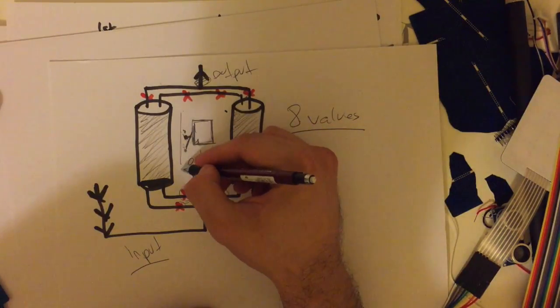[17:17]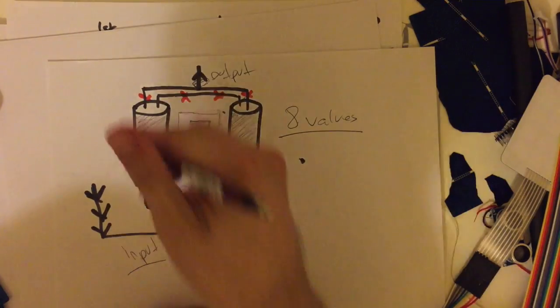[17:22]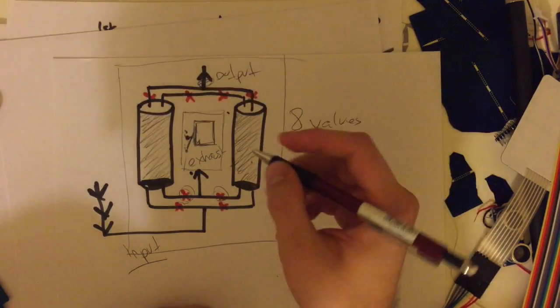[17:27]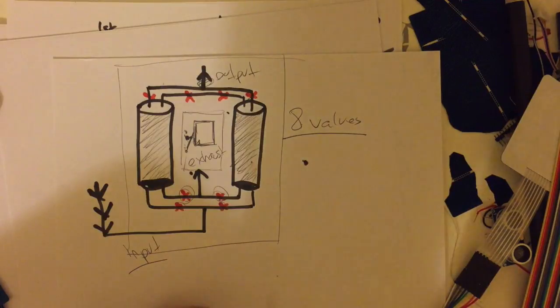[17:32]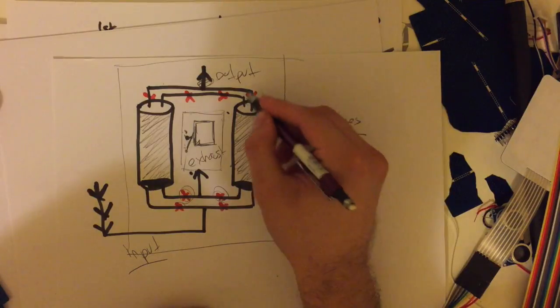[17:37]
Okay, so the PLC should be placed in the middle, and the DC motor should be placed below the PLC. I mean, that's how I did it. It seems more ordered, and I actually cut an aluminum plate to place all of this on top of. Okay, so what else? The valves should be connected to the PLC. I'm going to explain how to connect these valves to the PLC later on. And yeah, I think that's it.
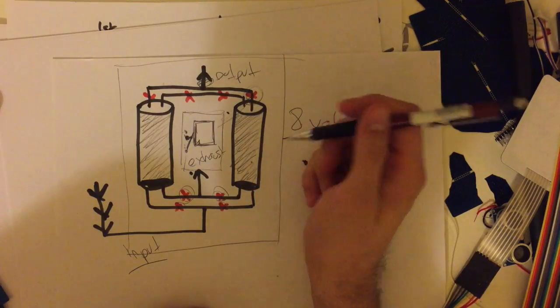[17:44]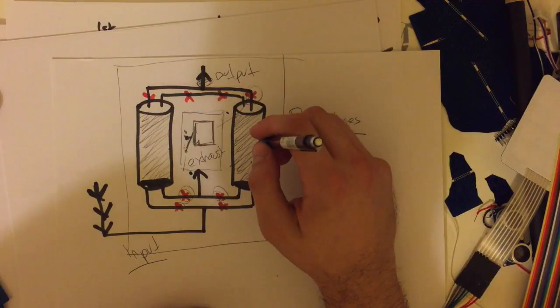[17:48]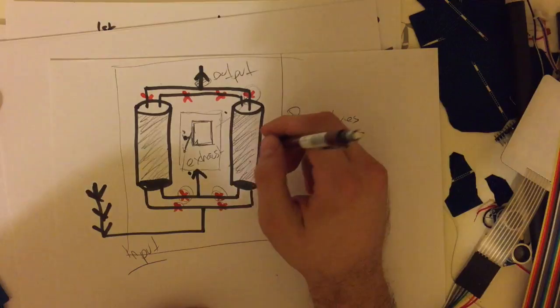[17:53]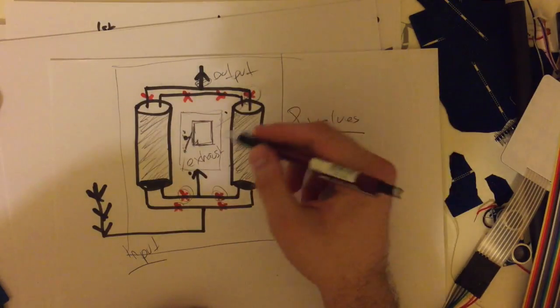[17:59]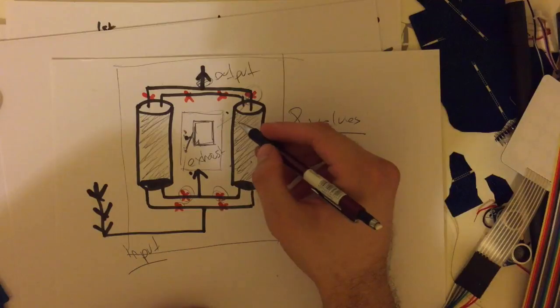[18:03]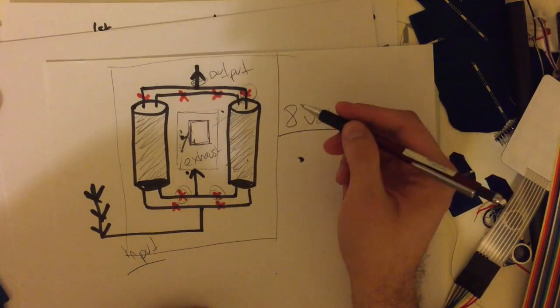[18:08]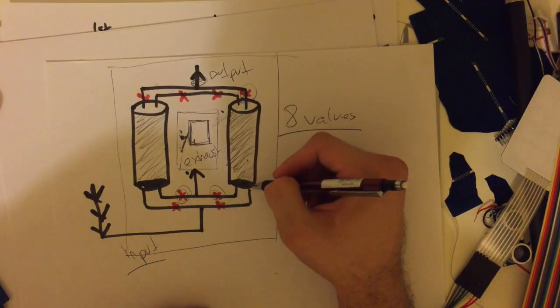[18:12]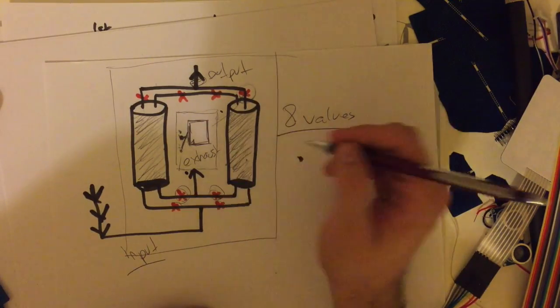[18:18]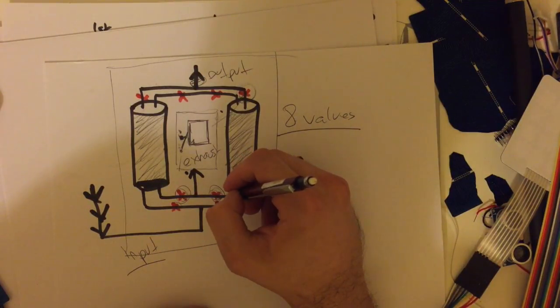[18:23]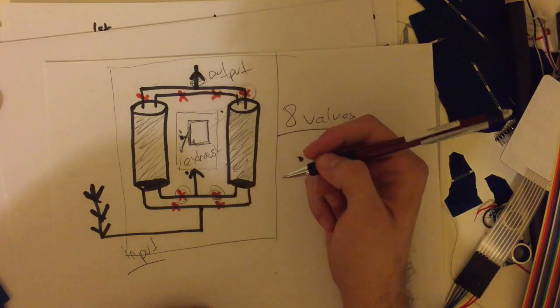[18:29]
Let me see. Make sure not to have zeolite get in touch with water. I'm telling you this for the second time, but it's very crucial because I lost a lot of time on it. One of the tubes was working perfectly and the other one wasn't so well, but I couldn't guess why until I changed one of the tubes and checked the zeolite, and it was wet. So guys, it was a waste of time. Make sure the zeolite doesn't get in touch with water, and make sure your valves are intact. Make sure the pipes are stuck nicely and tightly to the valves.
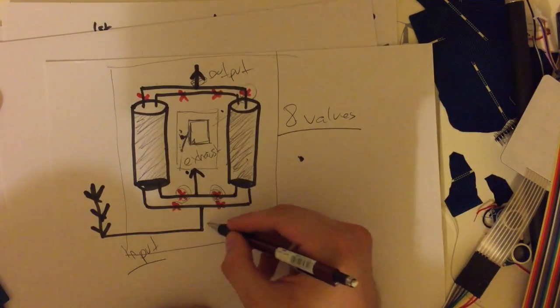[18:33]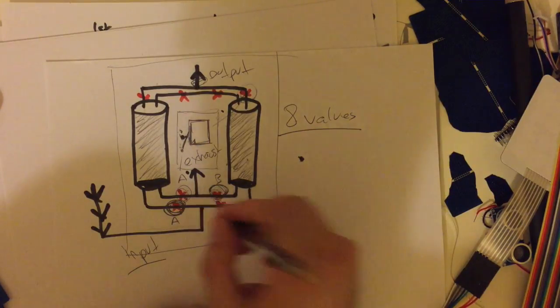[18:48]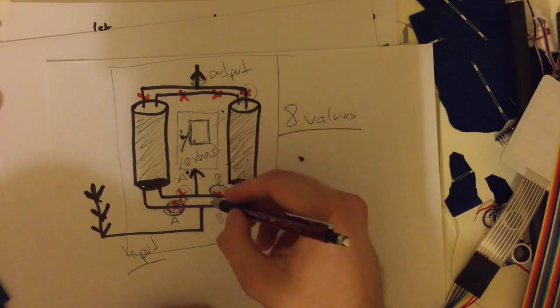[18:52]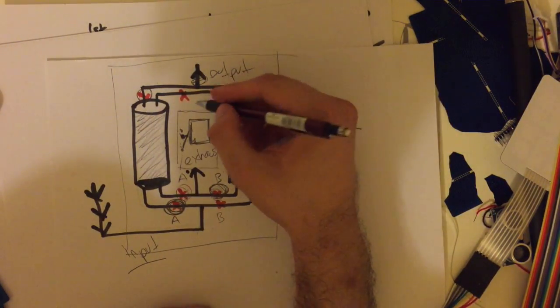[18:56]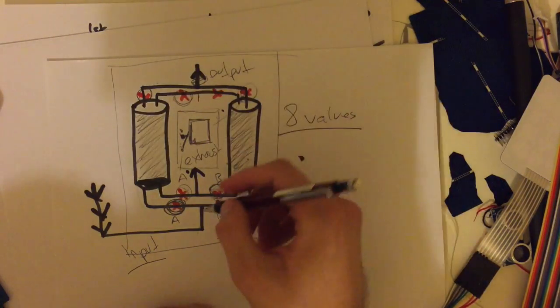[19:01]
And so the order should be like this. So input air is coming in. One of these X's should be on, and if this A is on, this B should be on too. So let's call these AB, AB. No 2 A's should be on at the same time. This is very important in order for the exhaust to work. So this should be open, and this should be open at the same time.
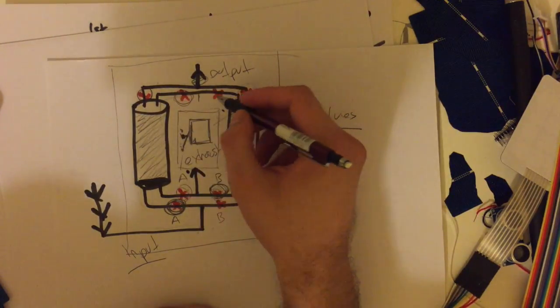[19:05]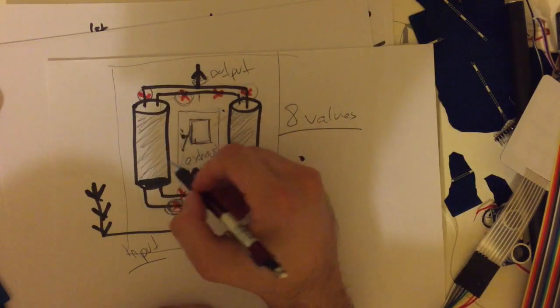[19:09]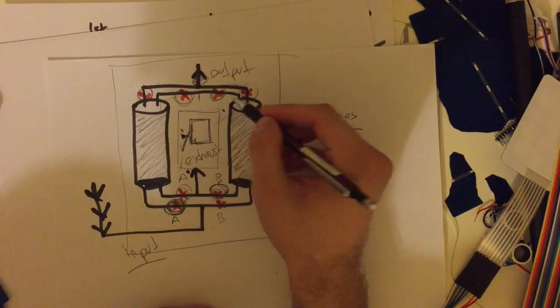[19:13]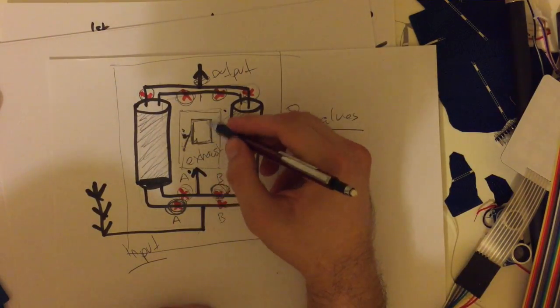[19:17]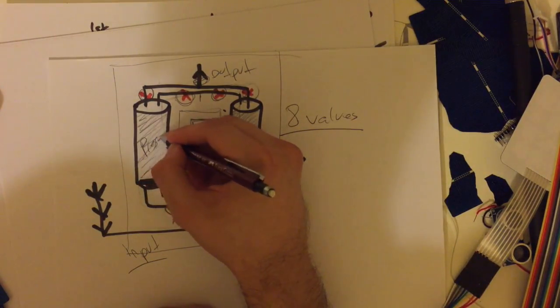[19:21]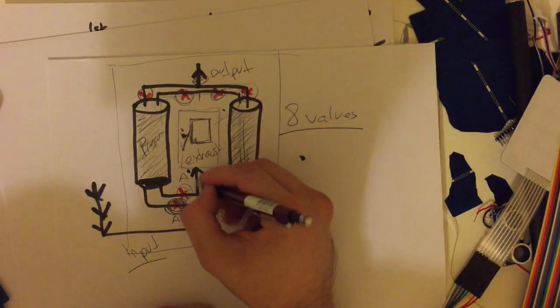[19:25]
All right, so we've created the necessary air pressure inside, and as this is going out, this should also be on too. Also, an exhaust of air is coming out with this pressure inside. This pressure inside is transferred to here to clean this tube up to have the exhaust work.
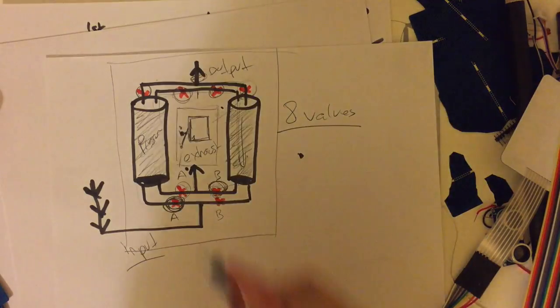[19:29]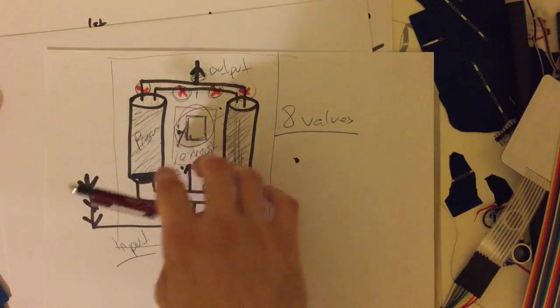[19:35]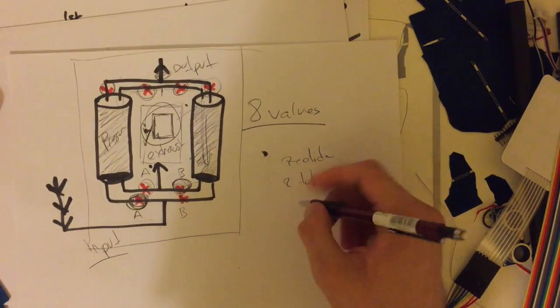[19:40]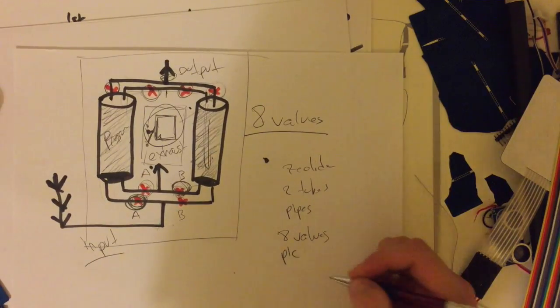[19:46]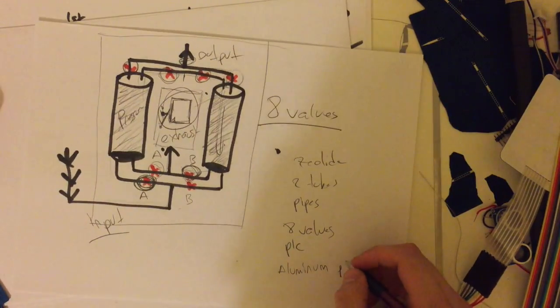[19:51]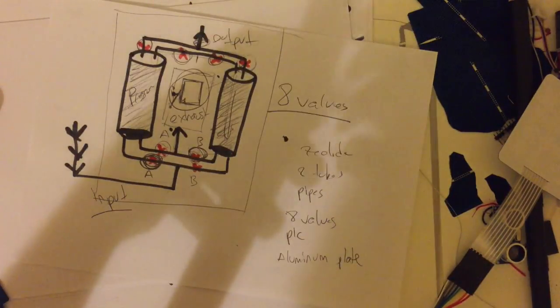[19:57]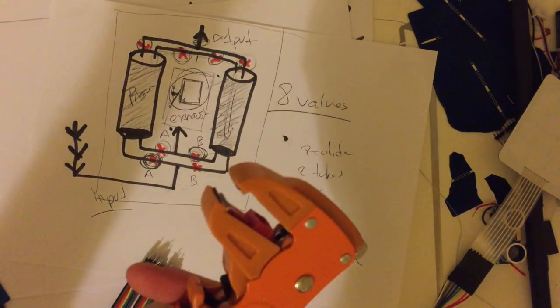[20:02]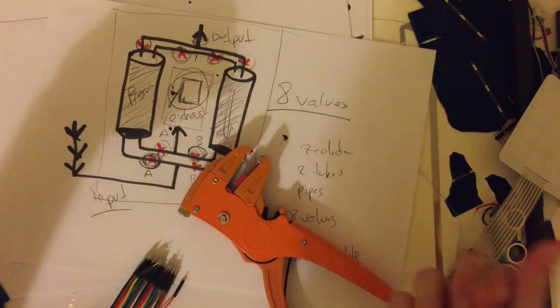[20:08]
Alright, so I'm going to explain how this PLC works and how you should connect the valves with the PLC. And this is the diagram. So zeolite, 2 tubes, pipes, 8 valves, PLC, and this is an optional aluminum plate. And just a couple of these wires will cut you through. And make sure to have the fundamental materials such as this. I mean, it helps you a lot.
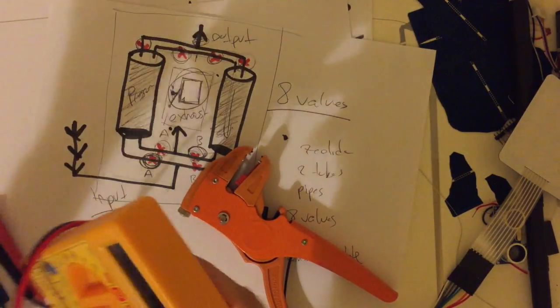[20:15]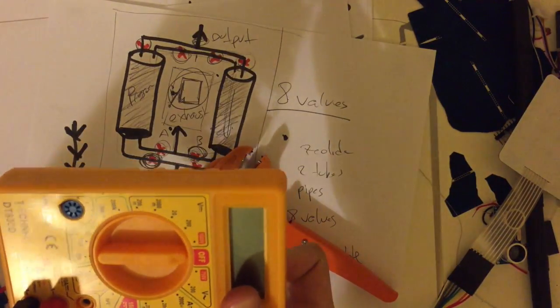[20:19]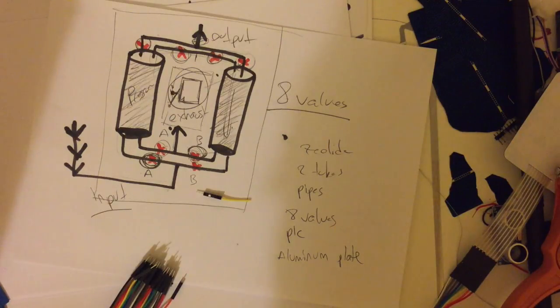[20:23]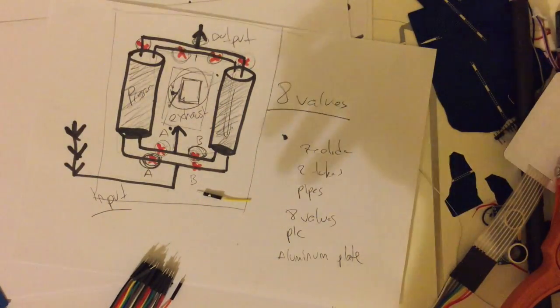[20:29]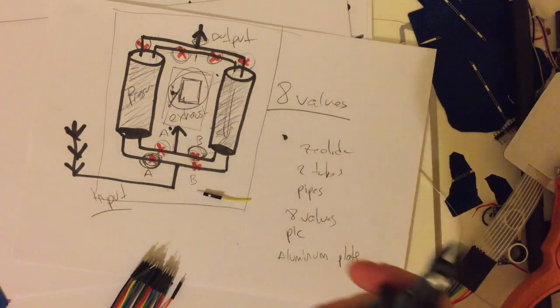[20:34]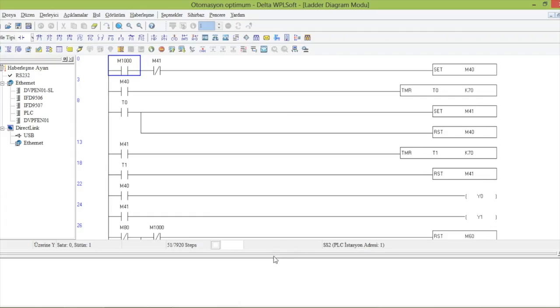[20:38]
And yeah, make sure to have cables, and a voltmeter is going to help you a lot through the troubleshooting process, because one of my cables wasn't working well, so I just checked it with a multimeter. So make sure to have these fundamental materials at your ease. Okay, so let's go for the PLC. I'm going to explain how the PLC works and how to connect the valves.
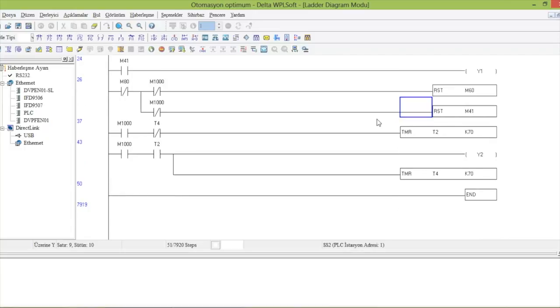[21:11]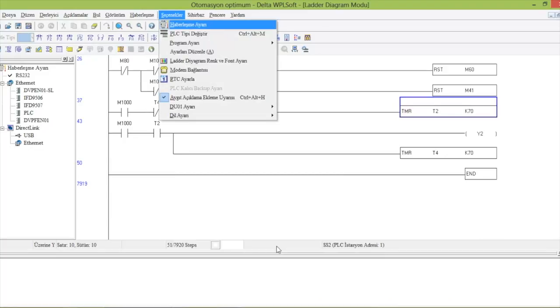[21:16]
This is the software that I used with the PLC. As you can see, the M1000s, the M's signify memory, and TMR is, I think, self-explanatory, timer, and K is the amount of seconds for the valve to open up. Yeah, and the reset button just resets the whole process. As you can see, it's pretty easy to use.